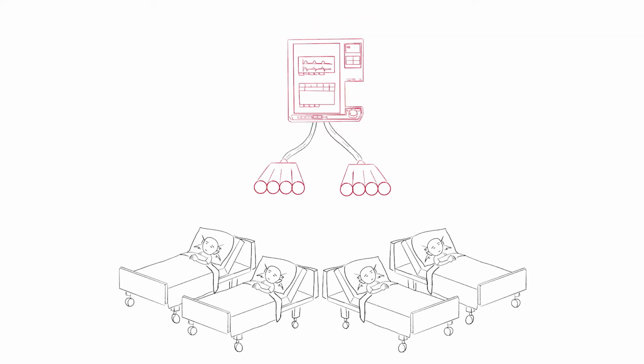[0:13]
Today, I'm going to discuss the design and 3D printing of an adapter to connect multiple patients to a single ventilator. Conceptually, the setup is simple. Use two four-way splitters to connect the inspiratory and expiratory limbs of a ventilator to four intubated patients.
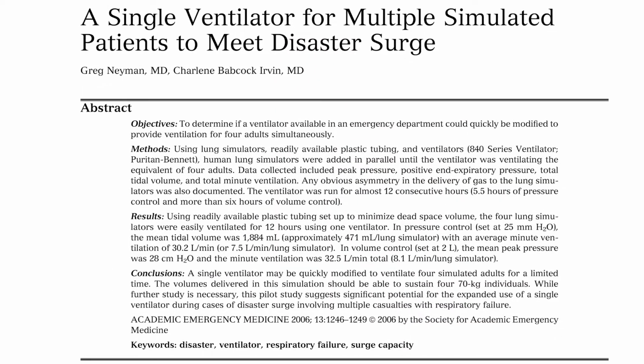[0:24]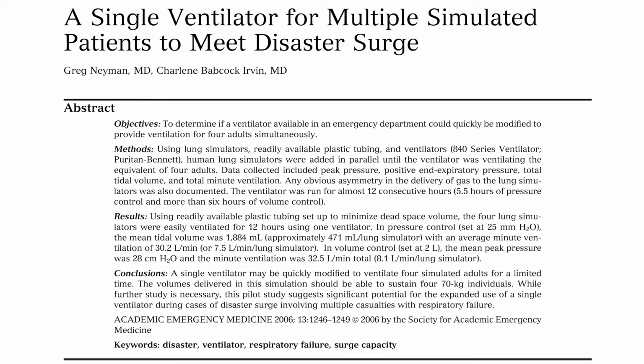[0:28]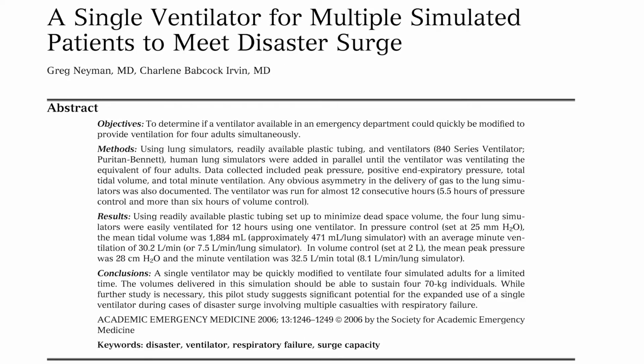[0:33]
The first mention of this concept comes from a 2006 article from the Journal of Academic Emergency Medicine entitled "A Single Ventilator for Multiple Simulated Patients to Meet Disaster Surge." In the article, the physicians use a system of T-pieces to create four linked circuits capable of ventilating four patients.
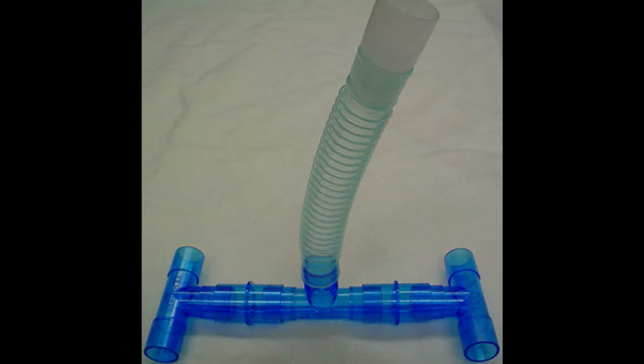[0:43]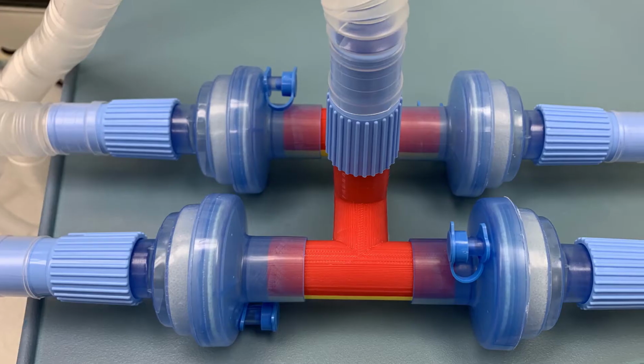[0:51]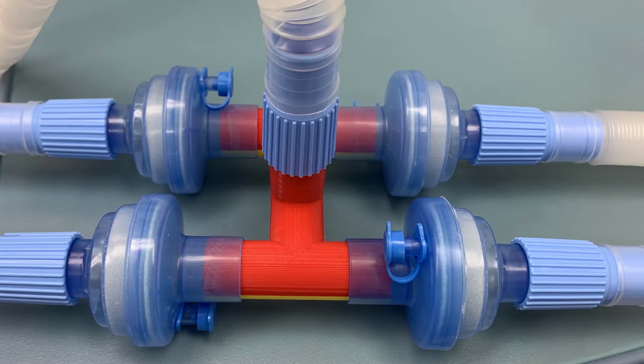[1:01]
Now, the astute members of the audience will probably ask the question, since there seems to already be a solution to the problem, that is, to connect already available T-pieces, and on top of that, the safety of 3D printed materials have yet to be definitively shown, why bother 3D printing a redundant solution?
Quite frankly, I thought the same thing, but one of my critical care colleagues asked if I could do it. So taking this as a challenge, I challenged myself to a 24-hour turnaround time to see if something like this was actually needed, could I make it rapidly? So let's get into it.
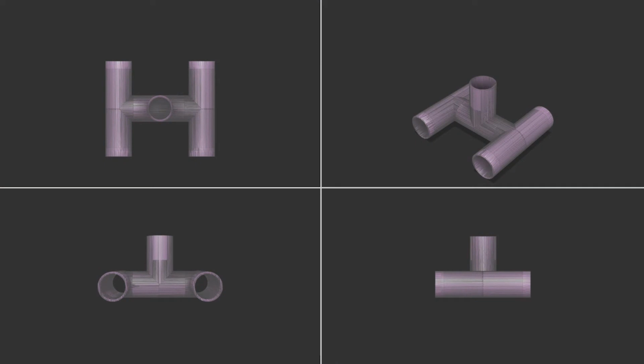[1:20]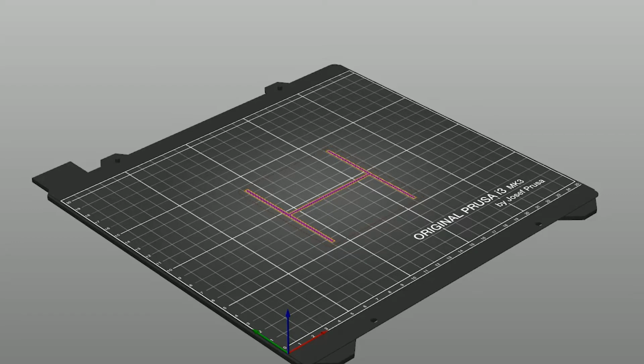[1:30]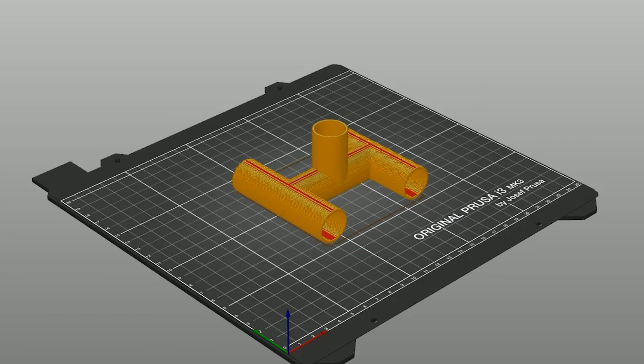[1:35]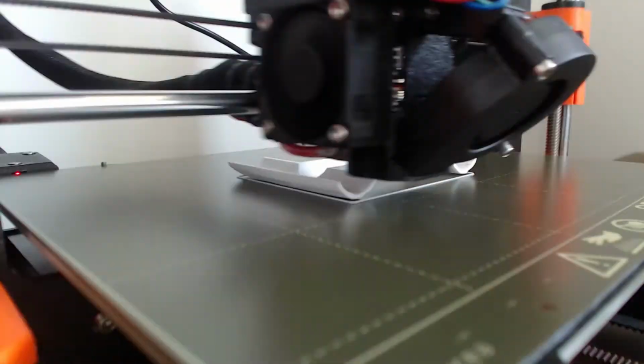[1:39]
Here's the design I came up with in Fusion 360. It's an ultra simple design, just some intersecting tubes, which literally took 15 minutes to make. For speed and simplicity, I sliced the model with 0.3 millimeter layer height without any supports. Now we print the model up.
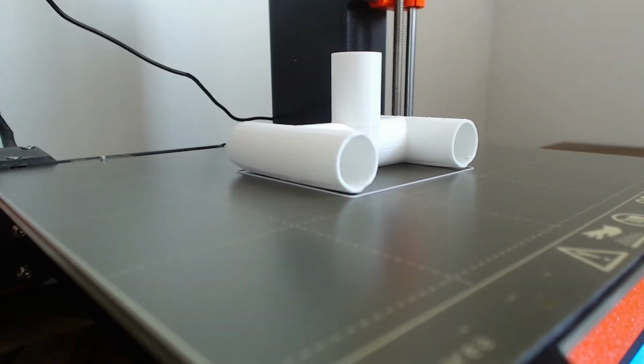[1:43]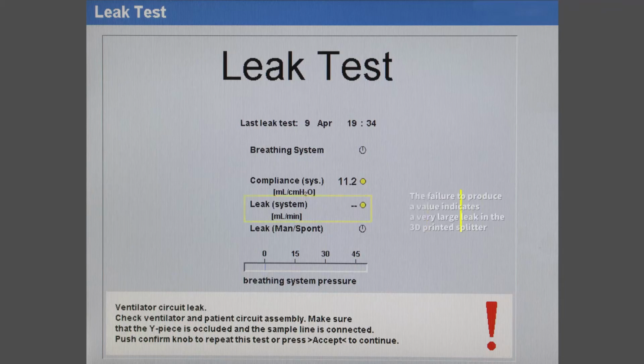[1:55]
After the print completed, I took it to the OR for a basic leak test. To simplify the test, I capped off three ends of the splitter so that just two ports could be connected in line with the circuit for a leak test. And the results? A spectacular fail. The leak in the circuit was far too high to be usable.
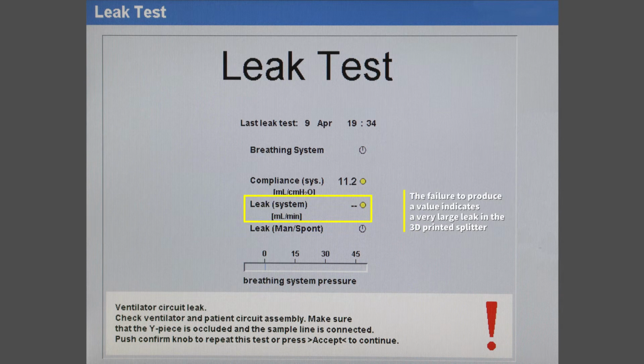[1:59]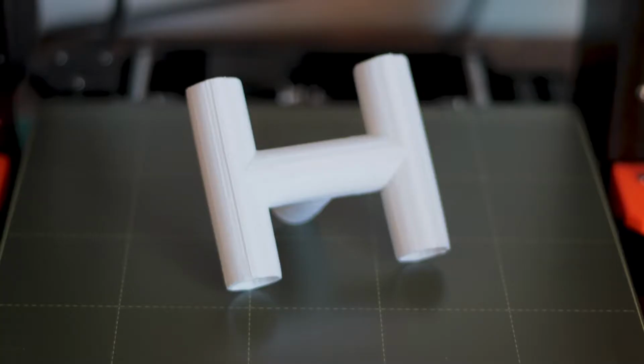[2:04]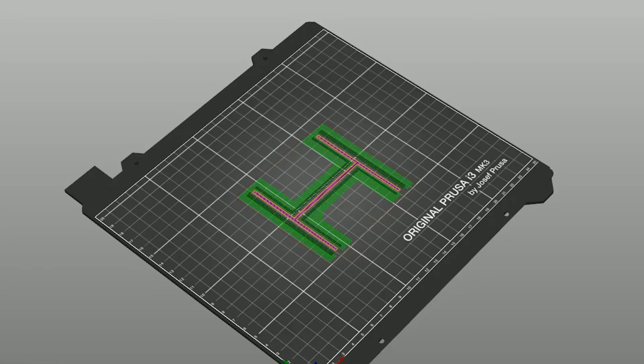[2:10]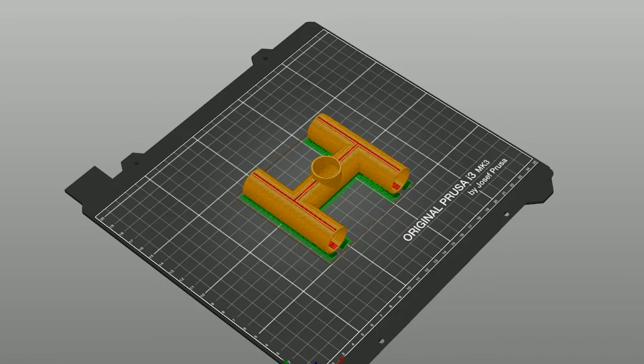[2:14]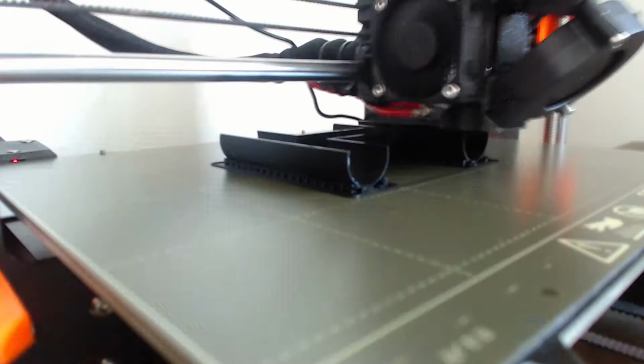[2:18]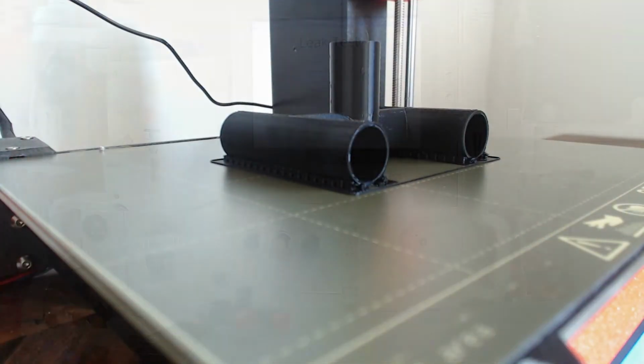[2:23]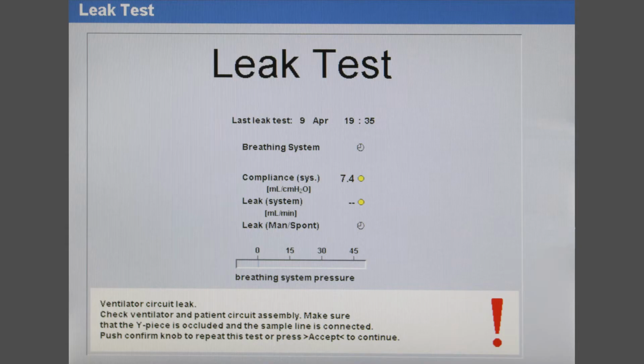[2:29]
A closer examination of the part reveals why. The printing process and large layer height resulted in a flat portion that prevented the splitter from creating a seal. I tried printing the part again. This time I used a smaller layer height and supports for the bottom to give a rounder shape. I tried a leak test again, and although there was improvement, the leak was still too large to be usable.
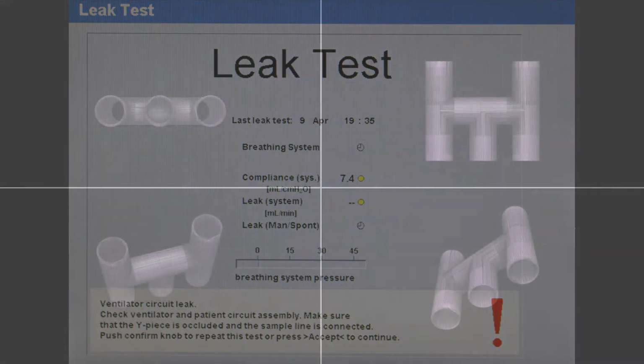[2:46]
It seems that with this design, I would have to do some post-print processing to get a smooth enough surface to create an appropriate seal. I wanted to avoid this because it would take too much time and add an additional layer of uncertainty to the already uncertain safety of 3D prints.
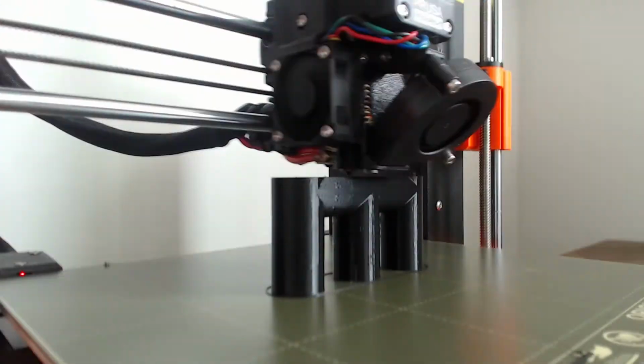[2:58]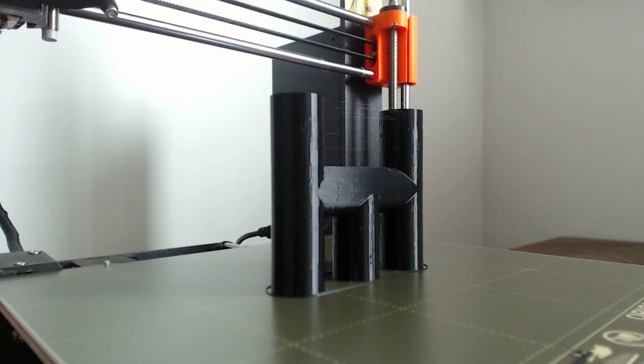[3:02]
I changed the design so that only a flat edge would be on the build plate and printed it up. This design had much rounder edges and was a better fit for standard 22 millimeter respiratory tubing. I took it again to the OR for a leak test. This time, the part passed the test successfully without issue.
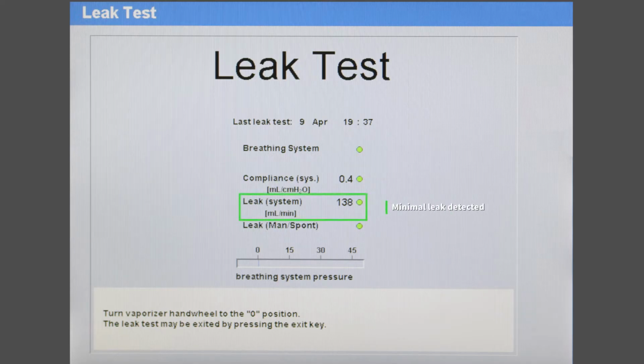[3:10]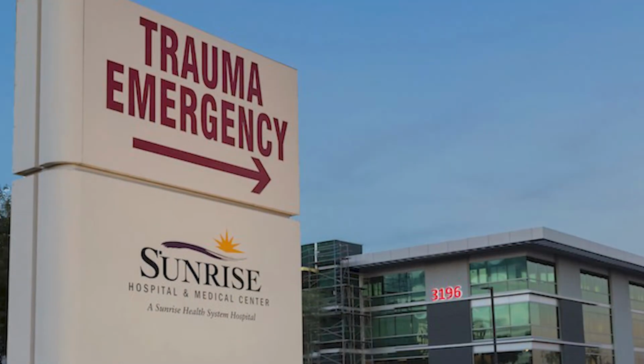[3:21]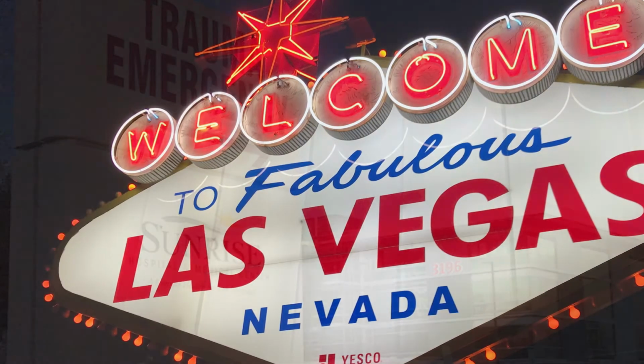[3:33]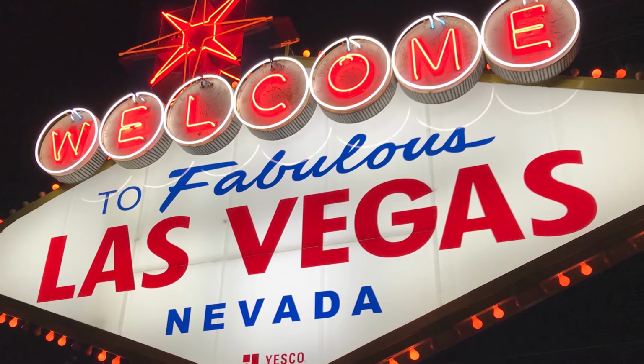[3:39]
Back to our discussion. Has ventilator sharing actually been used successfully in humans? The answer is yes. In 2017, emergency physicians at Sunrise Medical Center in Las Vegas successfully placed multiple patients on a single ventilator after an influx of intubated patients overwhelmed their ED during the Las Vegas shootings. So it can be done. Although it's important to note that these Las Vegas trauma patients were healthy at baseline before their injuries.
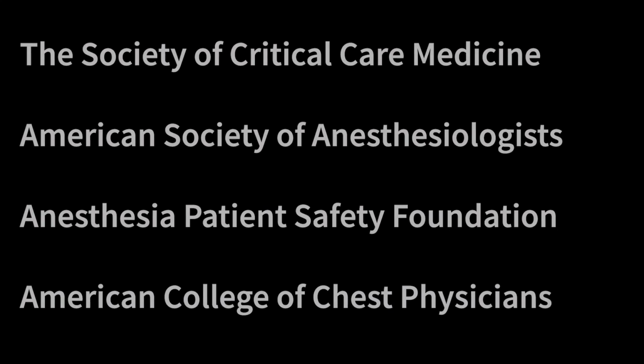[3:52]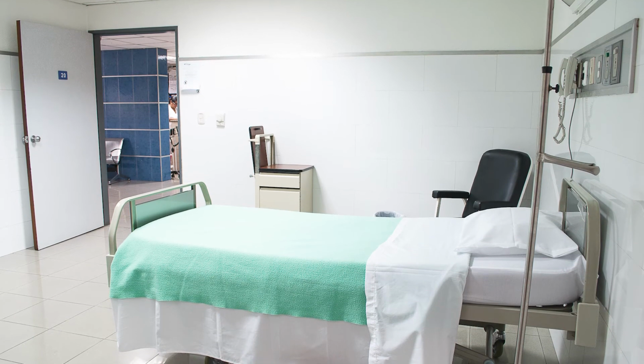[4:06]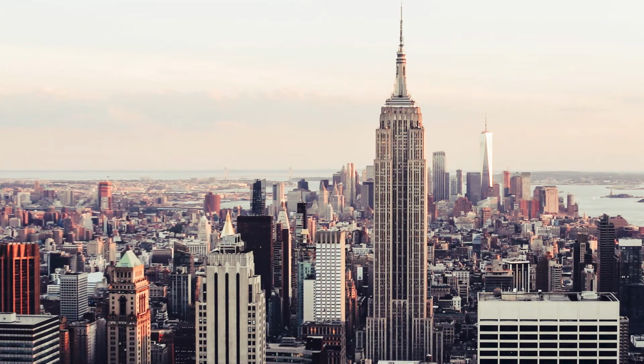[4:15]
Another question is, should we be attempting this in our COVID patients? A number of major organizations, including the Society of Critical Care Medicine, the American Society of Anesthesiologists, the Anesthesia Patient Safety Foundation, and the American College of Chest Physicians, have strongly recommended that this not be done. But even with opposition from these major organizations, the burden of COVID-19 disease is overwhelming certain areas of the US and world. At least one New York hospital has resorted to placing multiple patients on single ventilators. It will likely be some time before we can fully evaluate the success of these attempts.
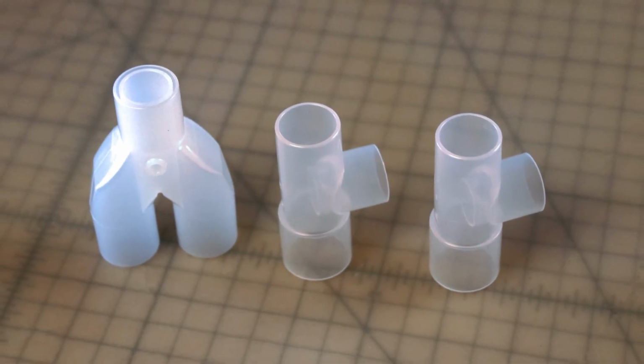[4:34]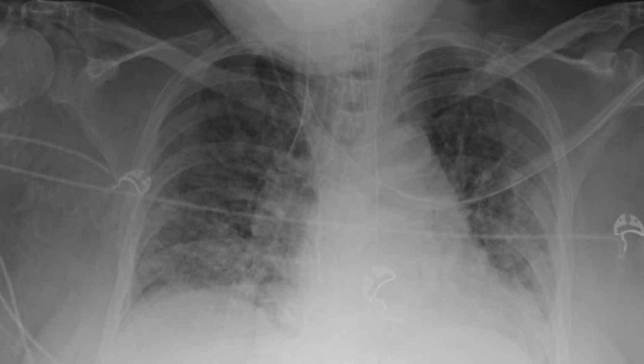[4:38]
In conclusion, is it necessary to create a 3D printed splitter for multi-patient ventilation? No. Already available T-pieces can be used. Should we be doing this? It seems pretty unlikely that treating multiple patients with complex lung disease will be successful with these simple splitters. A more complex solution would need to be developed.
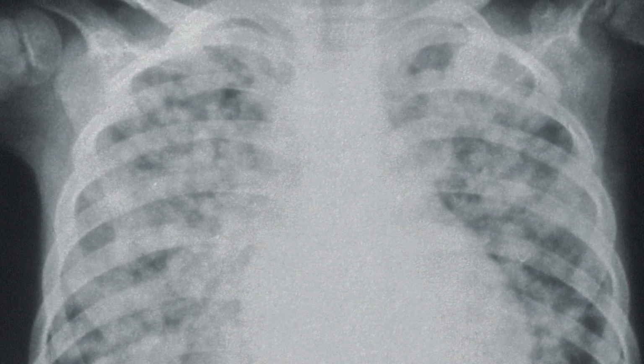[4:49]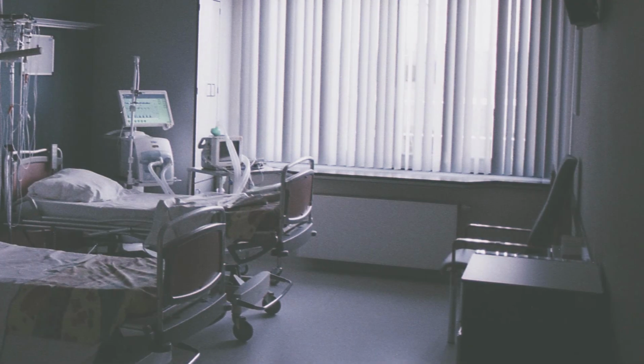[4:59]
This is a very difficult decision that some critical care physicians will have to make. Do you give one patient the best chance of survival and let the other die? Or do you give both patients an equal but lesser chance of survival?
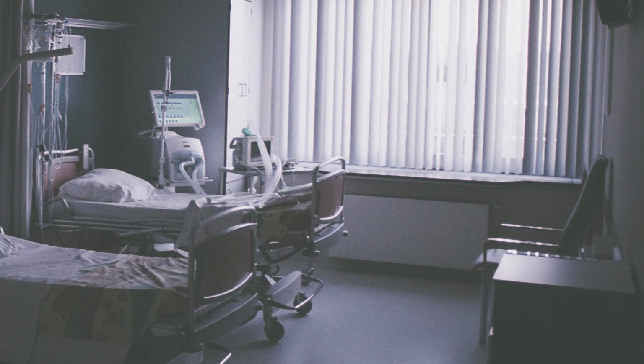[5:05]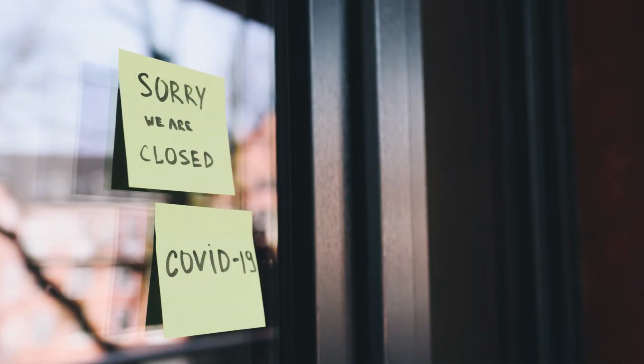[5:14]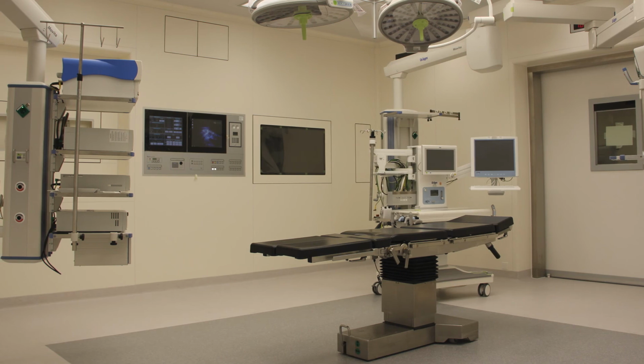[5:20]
That said, it is feasible that healthier, non-COVID patients be triaged to the shared ventilators and more single ventilators kept available for the COVID patients. However, we also have to keep in mind that with significantly less community activity and minimal elective surgeries going on in the US right now, the volume of traumas and post-surgical complications are significantly less, and this strategy might not free up that many ventilators.